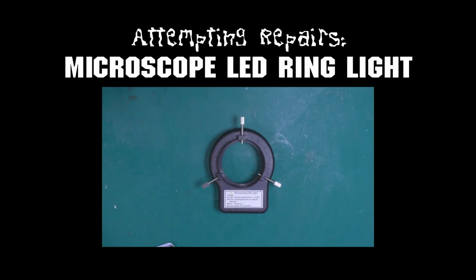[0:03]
It's alive! It's alive! It's alive!
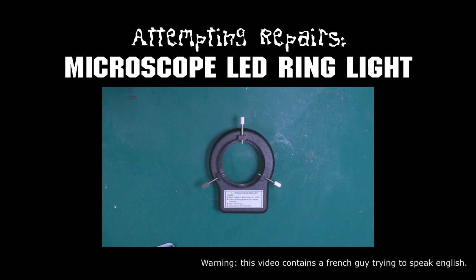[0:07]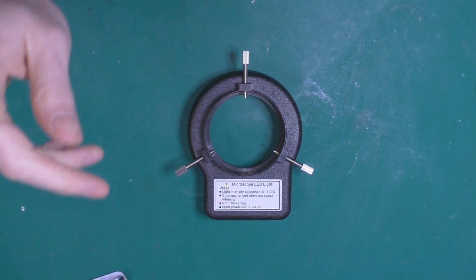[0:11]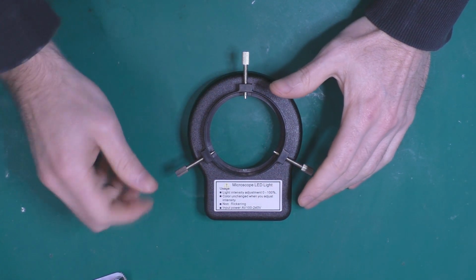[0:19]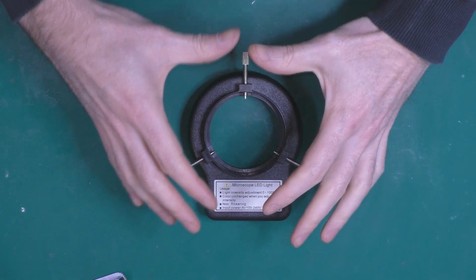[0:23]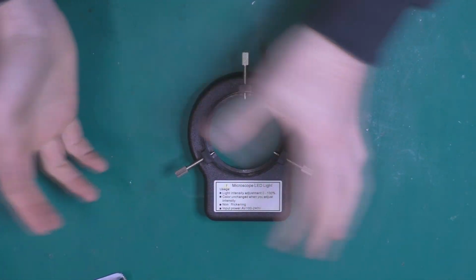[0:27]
It's alive! Hey everyone, this is another video about repairing stuff. I've already made a video about a trinocular microscope. I bought the same one from Strange Part. And the thing is, the light around the actual microscope stopped working. So I've already torn it down.
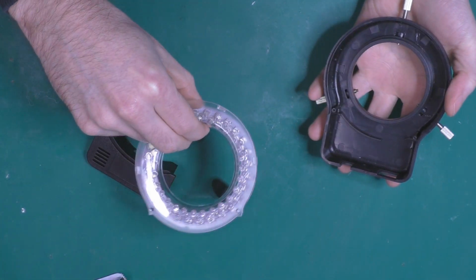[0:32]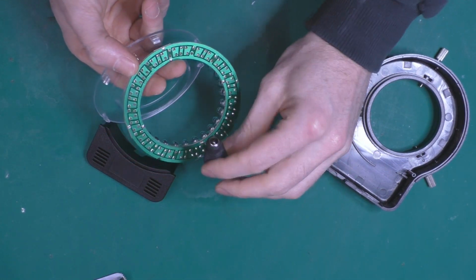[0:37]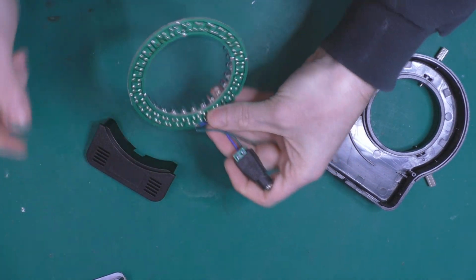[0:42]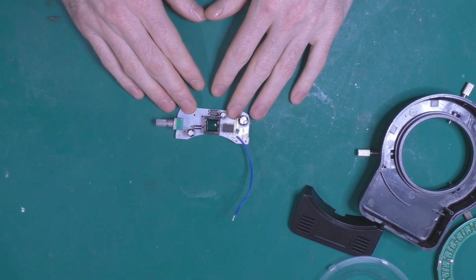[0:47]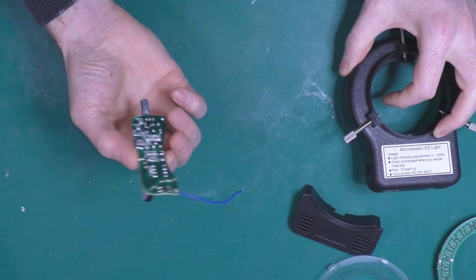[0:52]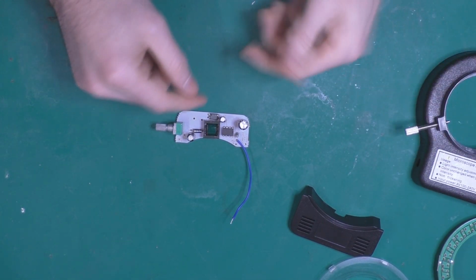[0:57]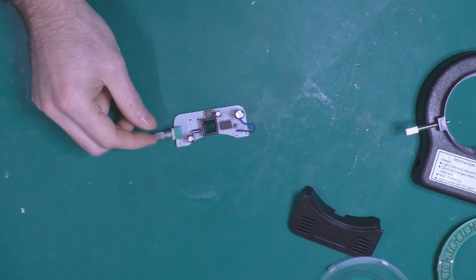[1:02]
As you can see, we've got our LEDs here. I've already checked the polarity and, whoops. Anyway, it doesn't matter. I know where the positive and negative are. And this is basically the board inside. If you don't remember, you already get an AC adapter inside, 100 to 240 volts. And then you have the conversion here, the step down circuits to get the 12 volts.
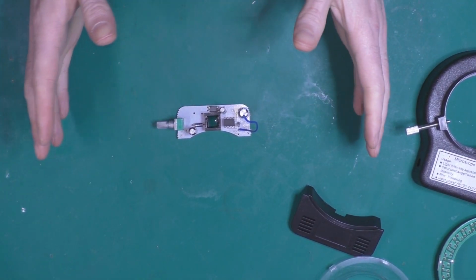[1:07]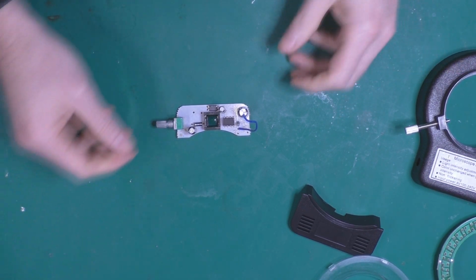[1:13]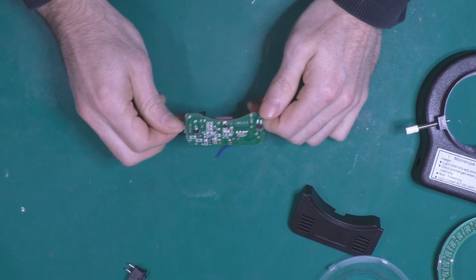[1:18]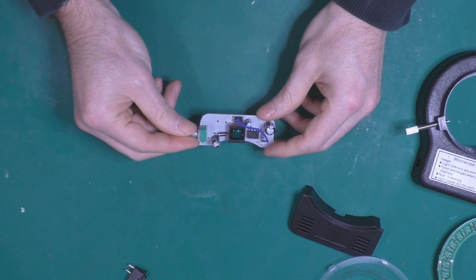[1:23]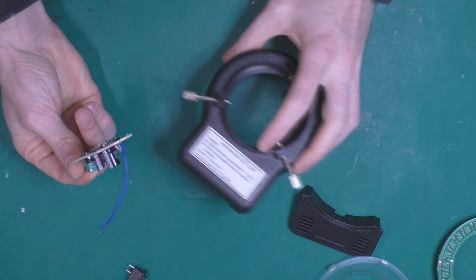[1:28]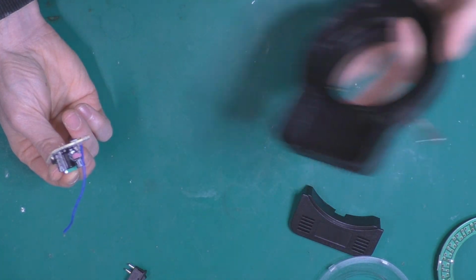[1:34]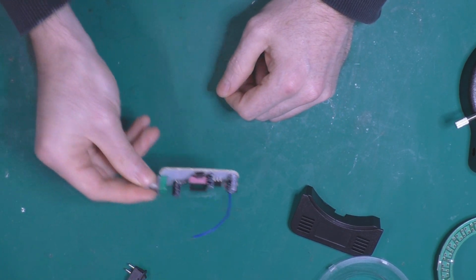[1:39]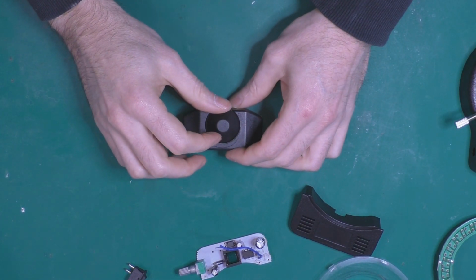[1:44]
The thing is, I don't know what's going on, but it just stopped working one day. I tried to turn it on and absolutely nothing lit up. So the first thing I wanted to do was troubleshooting, but honestly, I don't think it's worth it, because if you want to buy a full replacement, it's less than 20 bucks. So honestly, I don't want to spend too much time on this thing. But I still want it to be cheap, so I bought this adapter from Amazon.
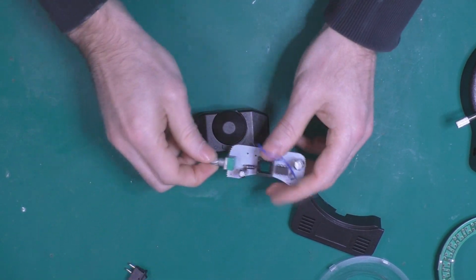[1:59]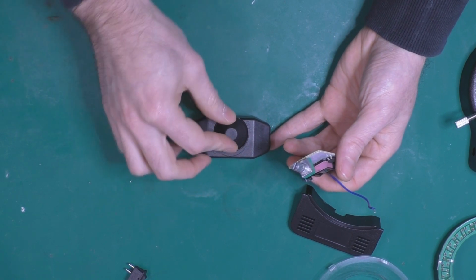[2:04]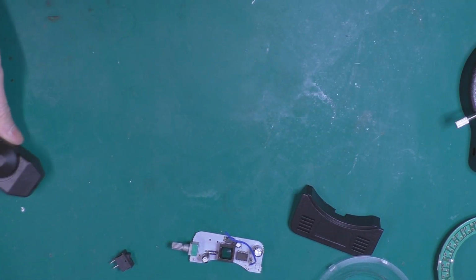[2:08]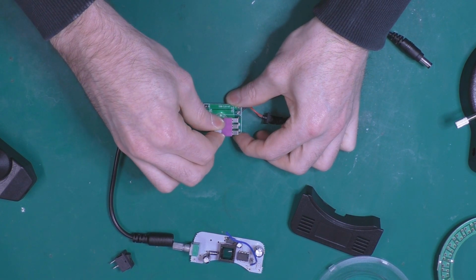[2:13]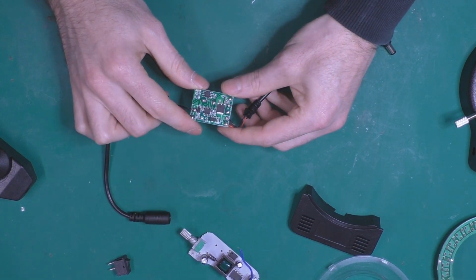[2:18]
If you don't know, this is essentially for LED strips. So you get an in and an out, and you just change the variator here, which is like a potentiometer with the on off. So you turn it off, turn it on, and then you change the brightness of the light. Again, I've already torn it apart. So we get one potentiometer with the on off, and I think I would just reuse that directly. I would just remove the in and the out,
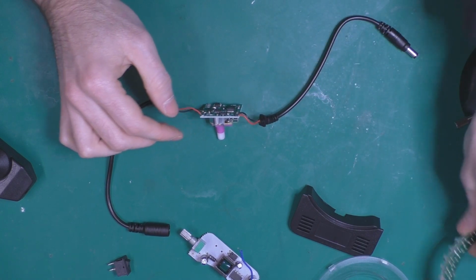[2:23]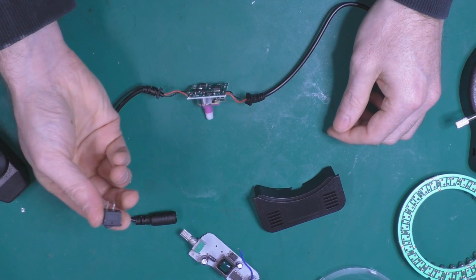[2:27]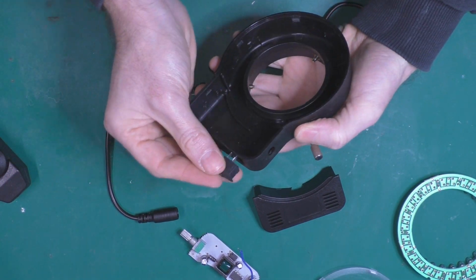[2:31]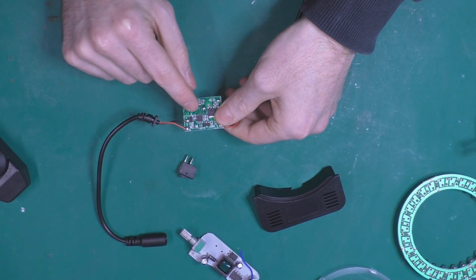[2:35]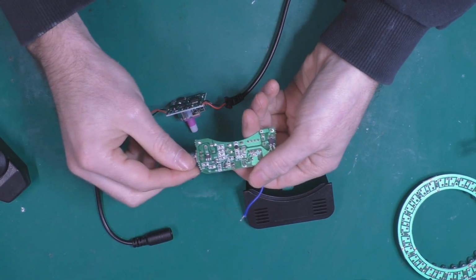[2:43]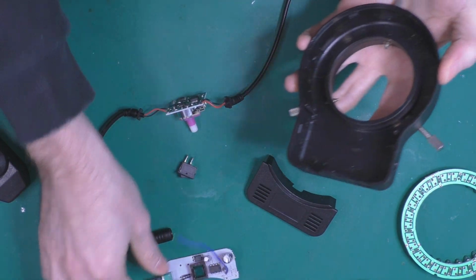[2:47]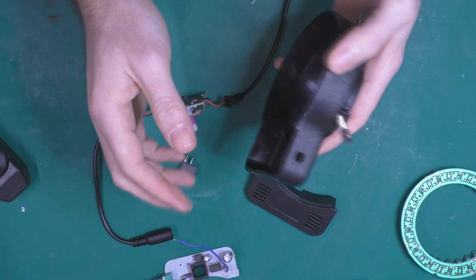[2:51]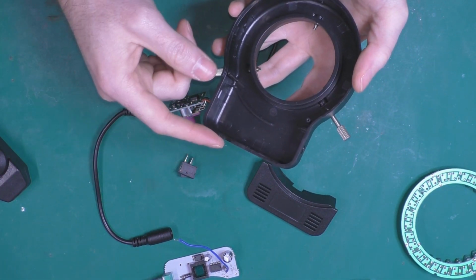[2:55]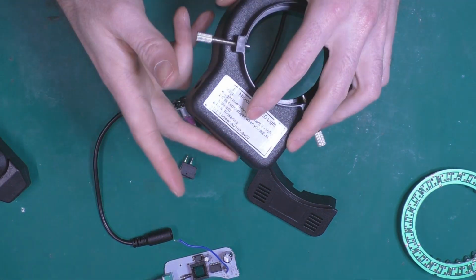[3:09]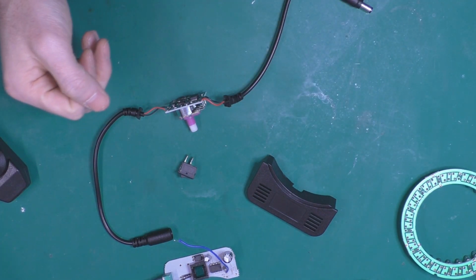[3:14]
put this one in, and solder the on off switch, the previous on off switch which was there, to the on off here of the potentiometer, the variator. I'm going to reuse this one, so I will just screw it down exactly. So I should have exactly the same button placement. The only difference is this one won't take AC, it will be DC, 12 volt DC. And the good thing about that is I will be able to power the camera on top of the microscope and the lights with the same power supply, 12 volt DC.
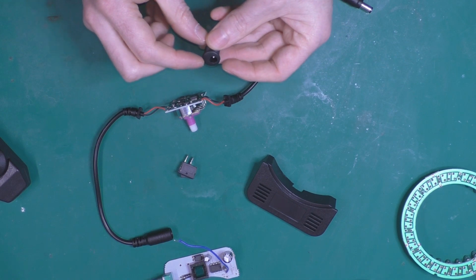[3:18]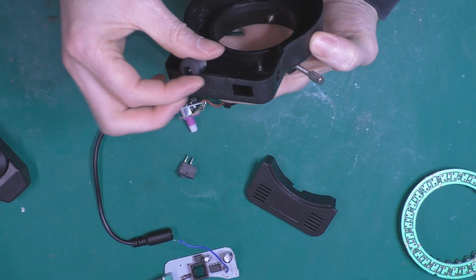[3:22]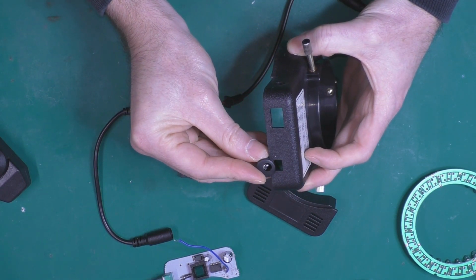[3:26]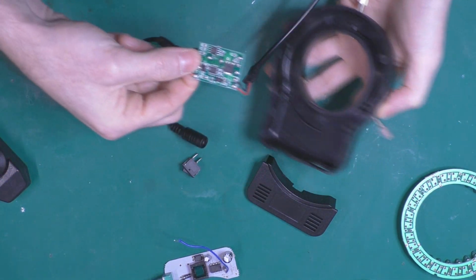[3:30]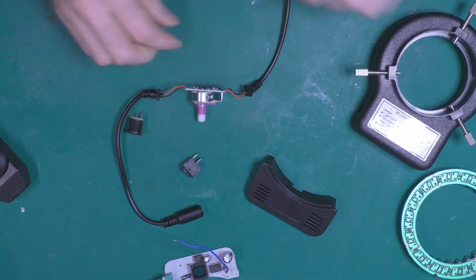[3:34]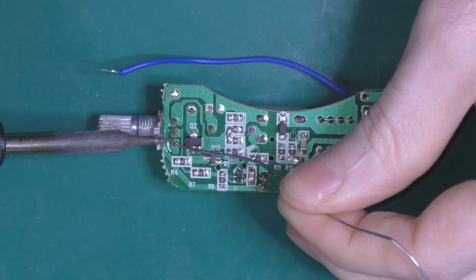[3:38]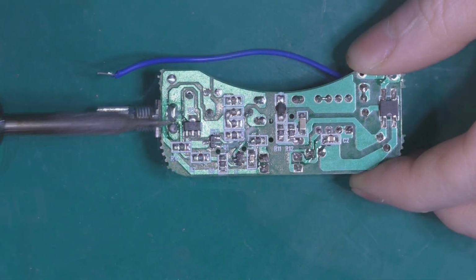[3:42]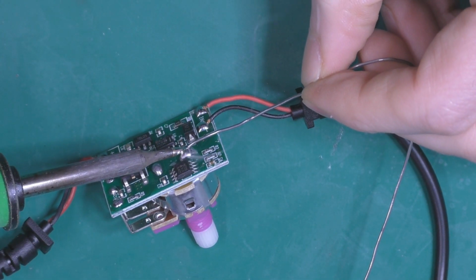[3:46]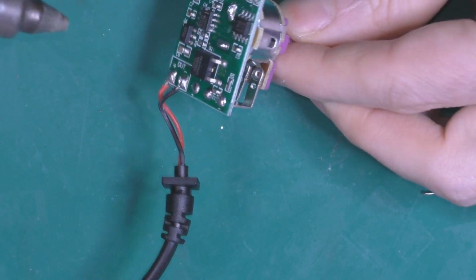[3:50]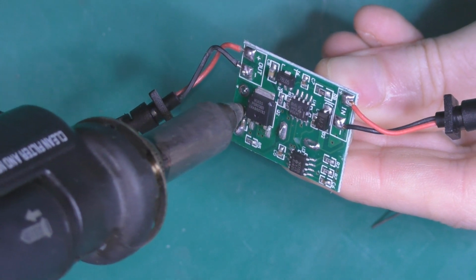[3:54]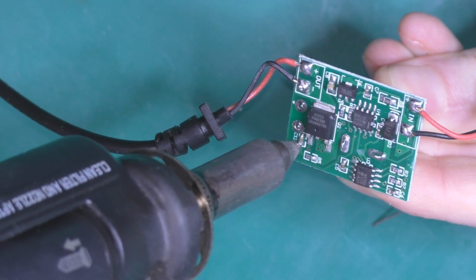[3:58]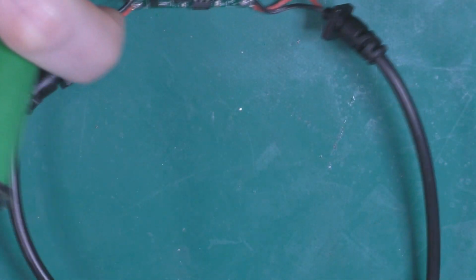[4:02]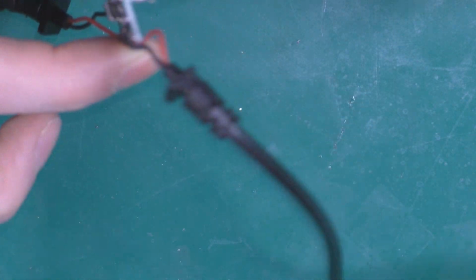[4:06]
The only minor change is going to be the DC plug here, and I'm going to drill and put that in. It should be working. I should have a lot of space inside. So let's remove everything and let's do this. We'll be right back.
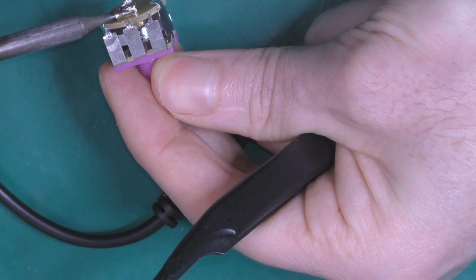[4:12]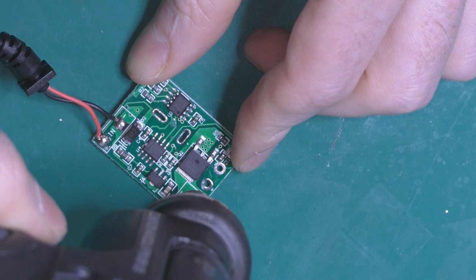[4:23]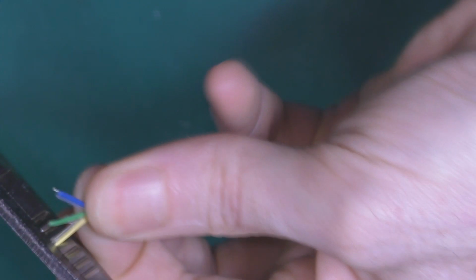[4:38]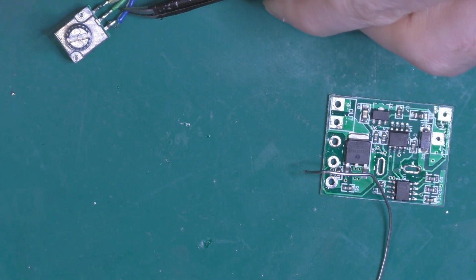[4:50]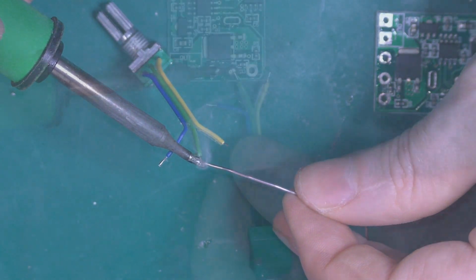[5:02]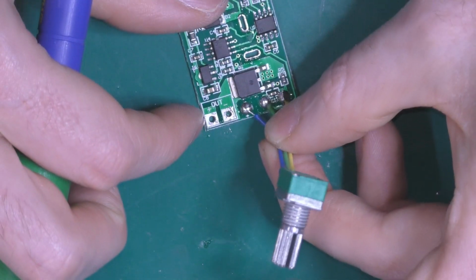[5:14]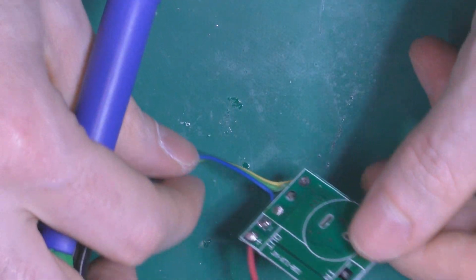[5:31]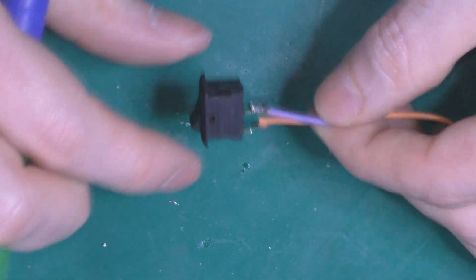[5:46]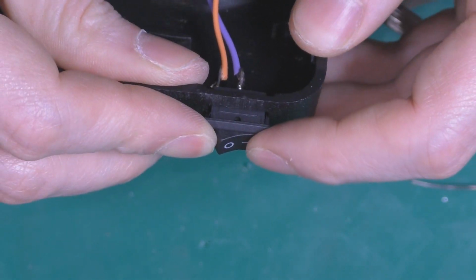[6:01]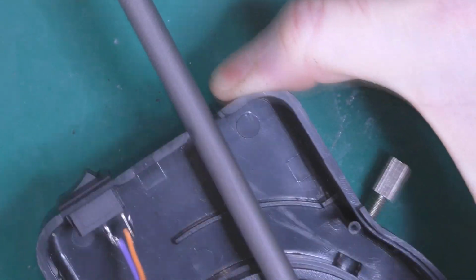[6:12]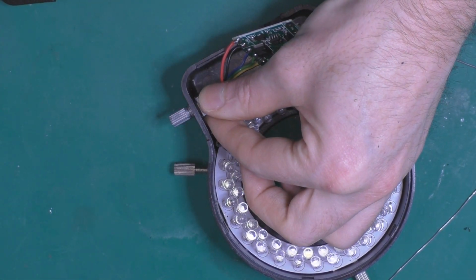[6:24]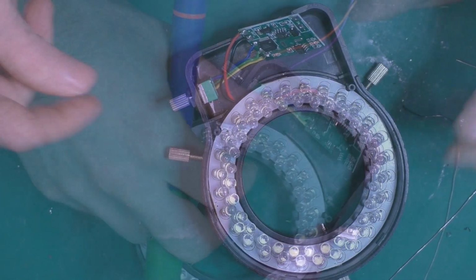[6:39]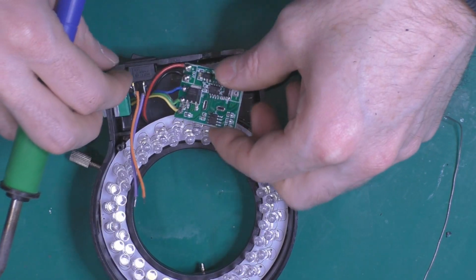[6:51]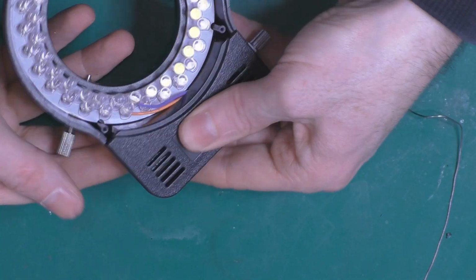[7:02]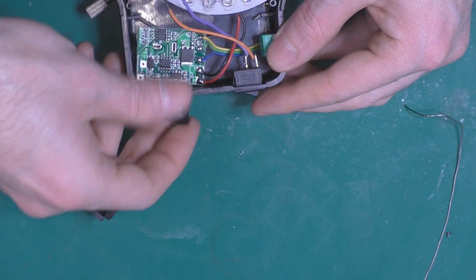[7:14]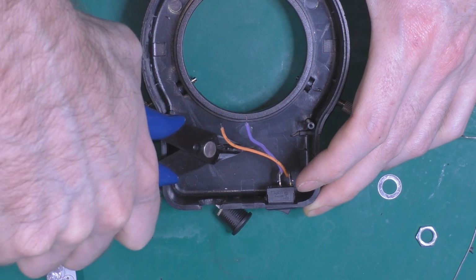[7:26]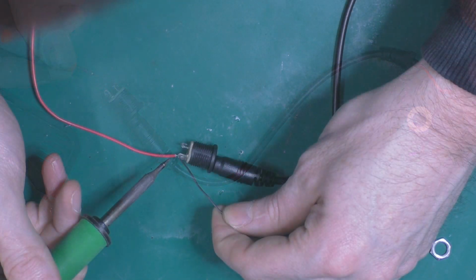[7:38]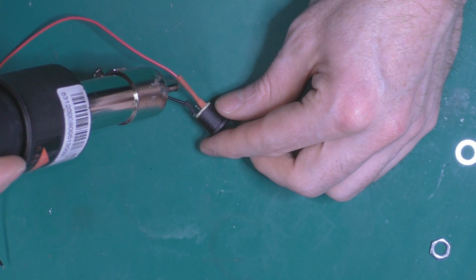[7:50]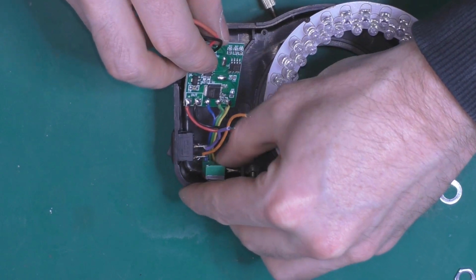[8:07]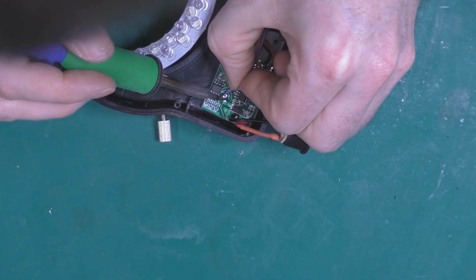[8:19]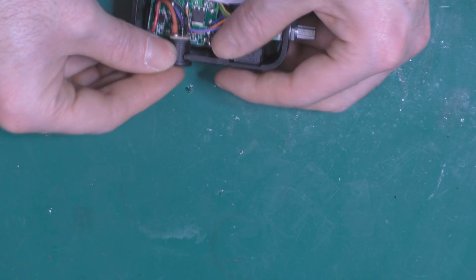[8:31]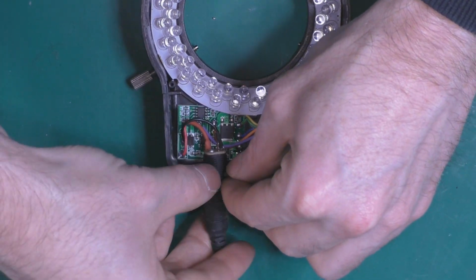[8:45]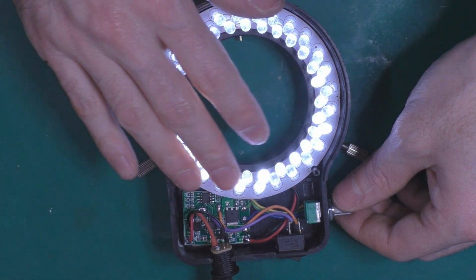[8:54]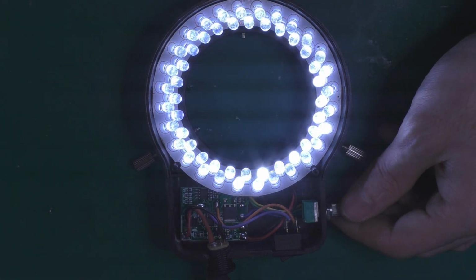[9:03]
So let's check if it's working. I'm not convinced it's going to work because the orange wire from the switch is not linked to everything. So I got my 12 volts. Okay. Well, it's flickering. I don't know why. Maybe it's too low, but yeah, it's working. And the on switch doesn't do anything, unfortunately.
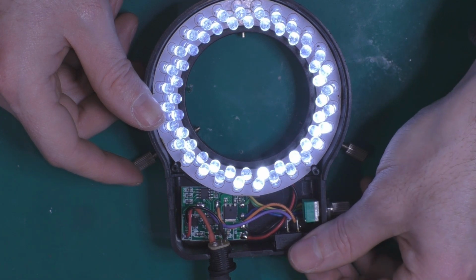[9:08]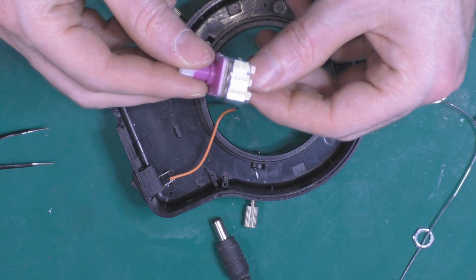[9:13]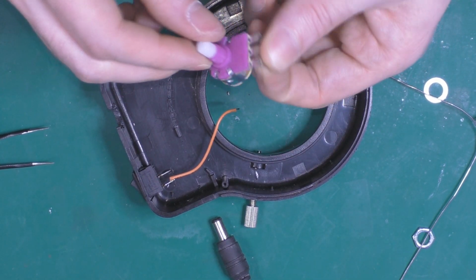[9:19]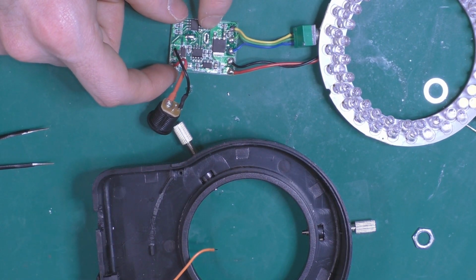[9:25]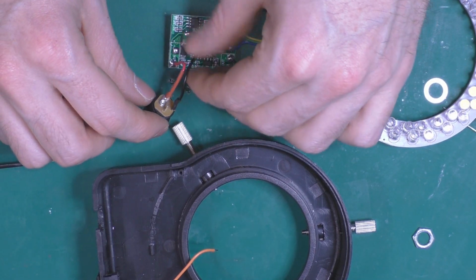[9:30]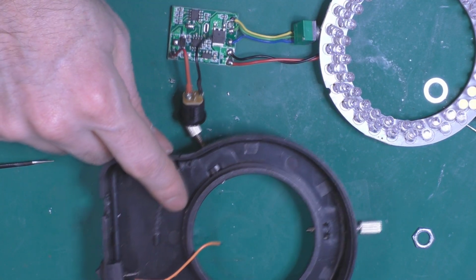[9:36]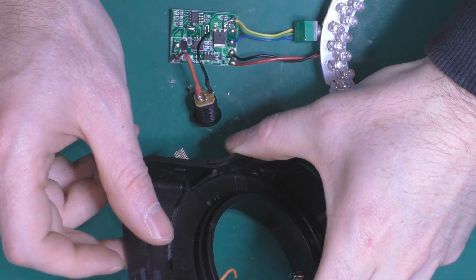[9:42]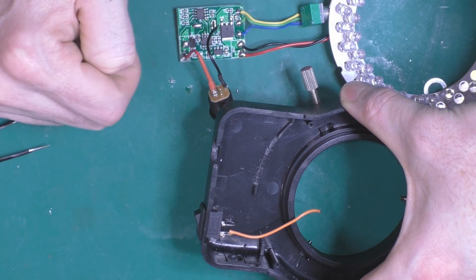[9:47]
So, change of plan. I don't understand because this is two poles really separate. So this is really a switch and the classic potentiometer here. So the trace here doesn't go anywhere. I don't get it. I'm going to change that. I'm just going to have the ground plane linked to the power switch here and this to the ground plane. So when I press it, I'm going to have a closed circuit and then I'm going to open the ground.
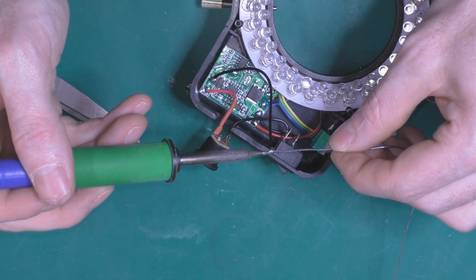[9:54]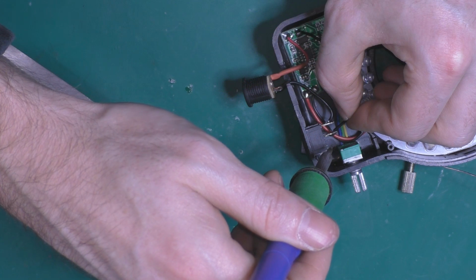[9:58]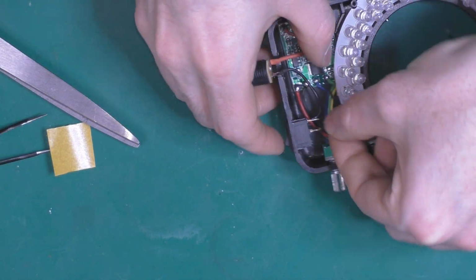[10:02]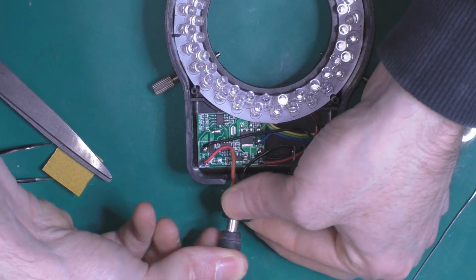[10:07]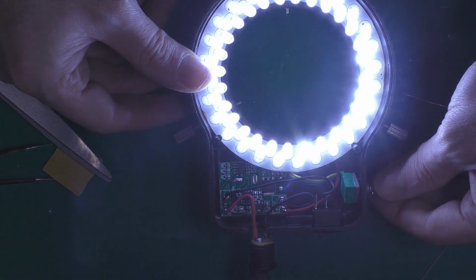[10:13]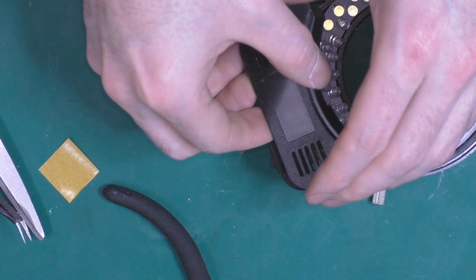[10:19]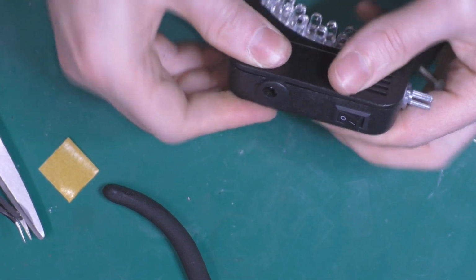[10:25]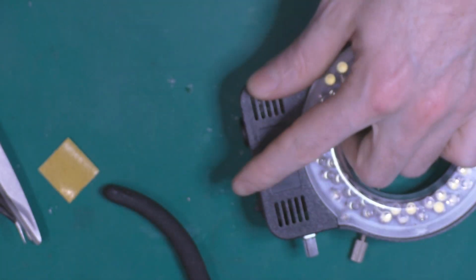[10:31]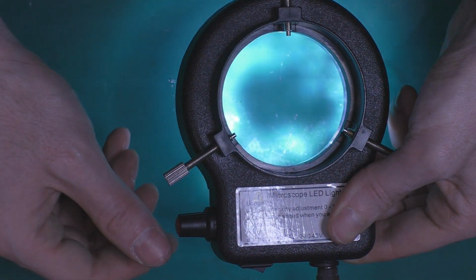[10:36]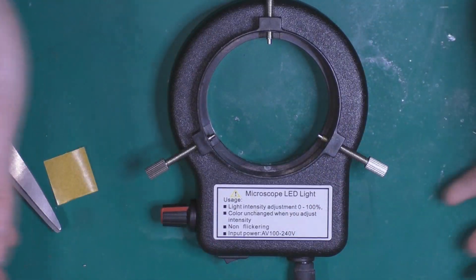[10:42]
So let's try that again. There you go. I'm going to put the link in the description.
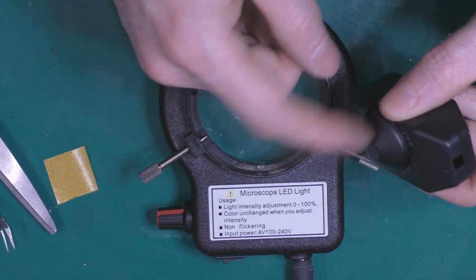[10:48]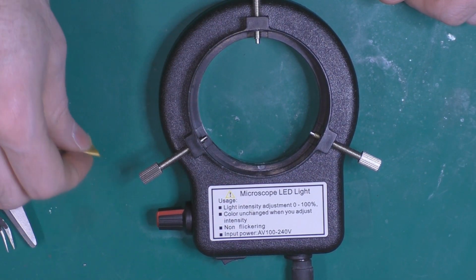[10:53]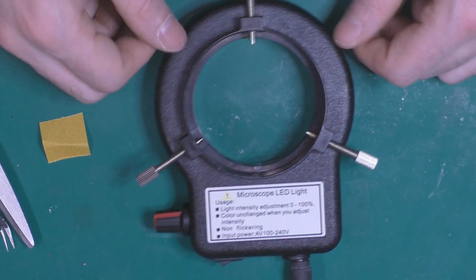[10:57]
This was bought on Amazon. So yeah, it's a quick fix. Hope you enjoyed it and thanks for watching.